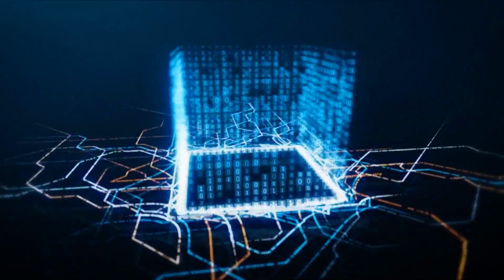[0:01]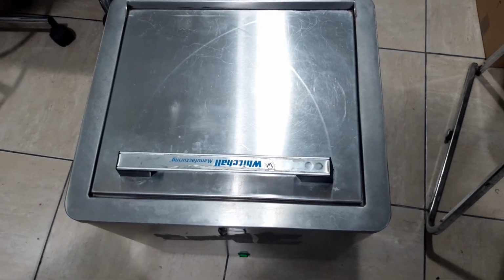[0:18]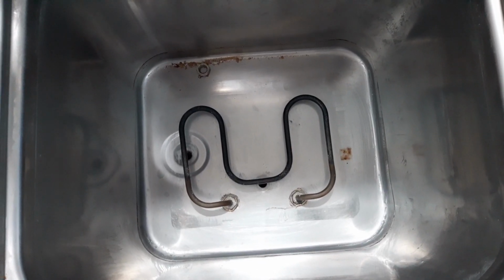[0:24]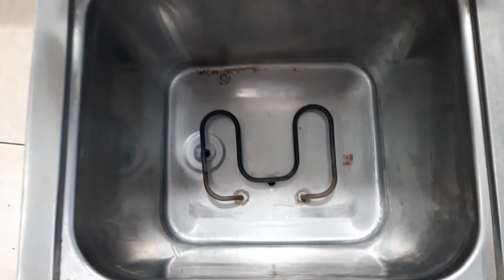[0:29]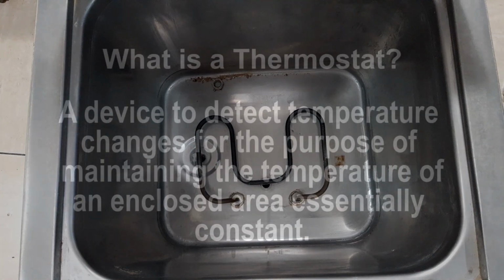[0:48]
Okay guys, I have a hydrocollator, and if we open this one, there is a heater, but the thermostat is missing. So we will connect a new thermostat here, and I will show you the connection and how to connect it. But first of all, let me explain what a thermostat and a hydrocollator are.
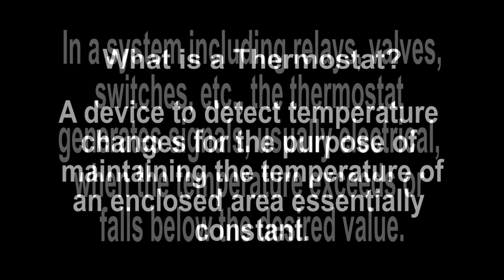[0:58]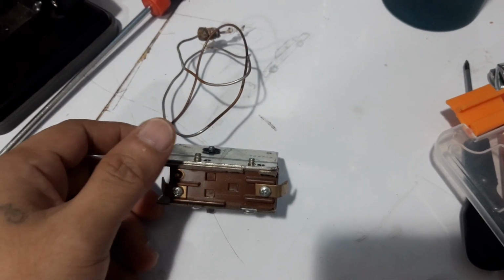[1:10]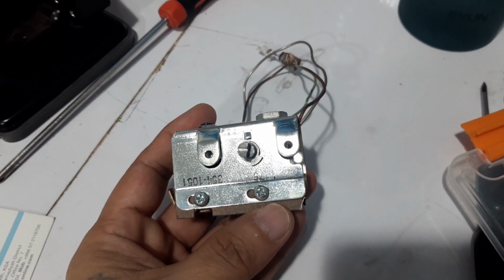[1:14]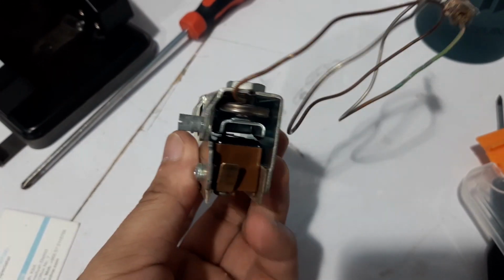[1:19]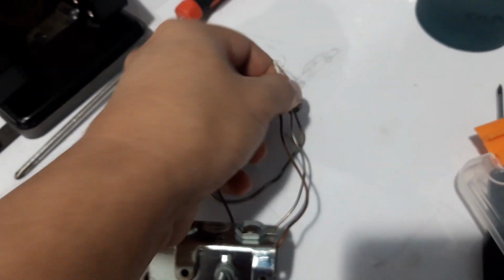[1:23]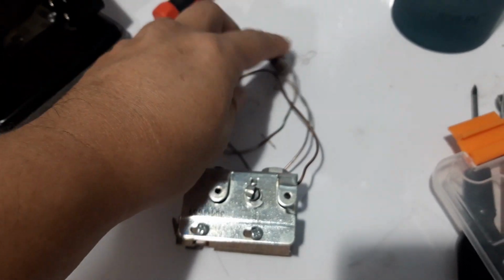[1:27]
So guys, this is a thermostat for a hydrocollator. Both sides are the terminals, and the tip is supposed to be here, but this one is broken, and we will replace it with the new one.
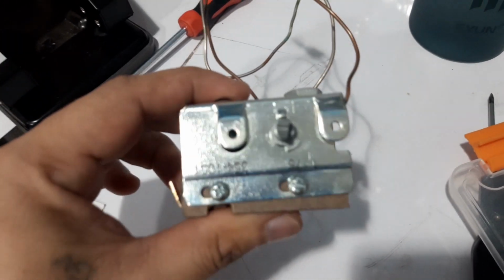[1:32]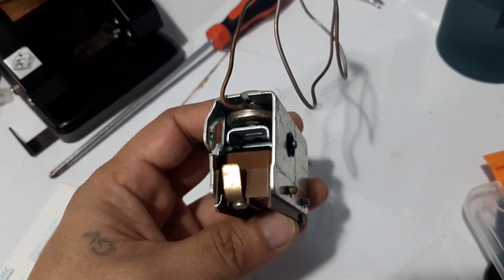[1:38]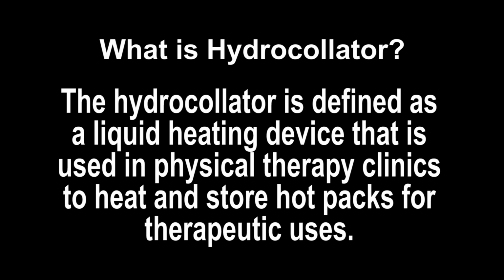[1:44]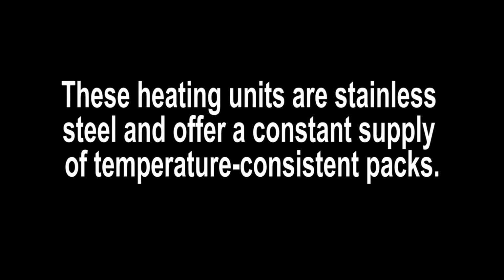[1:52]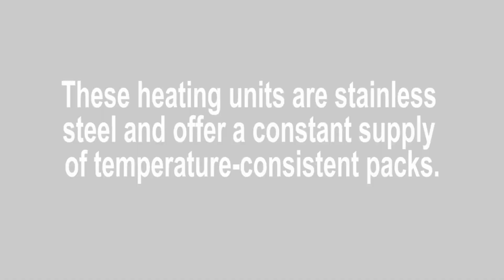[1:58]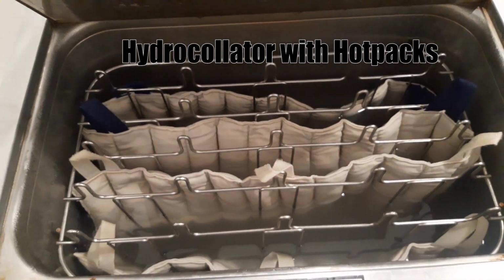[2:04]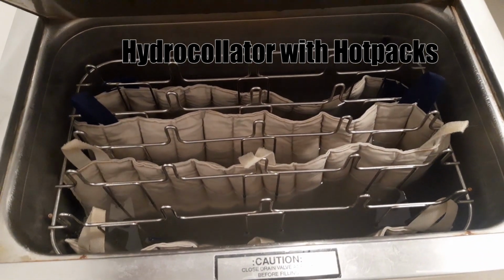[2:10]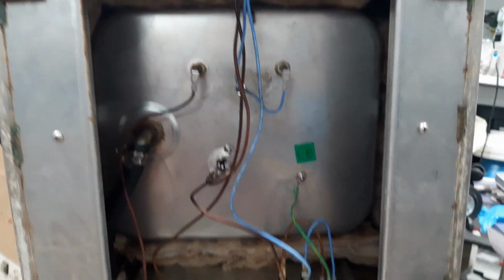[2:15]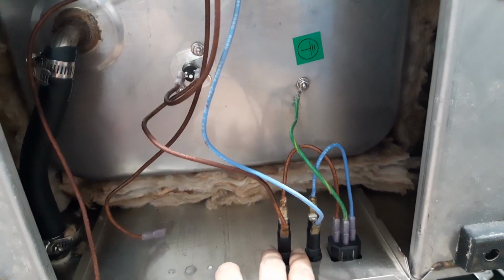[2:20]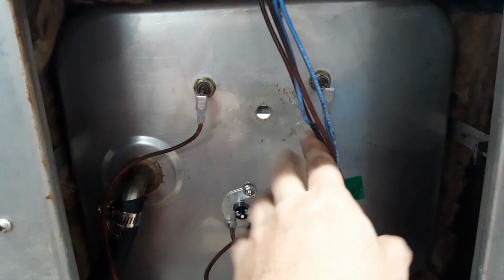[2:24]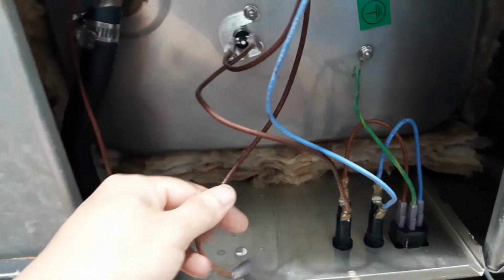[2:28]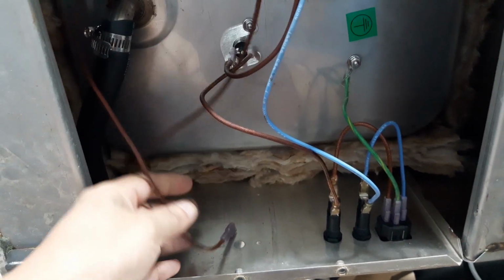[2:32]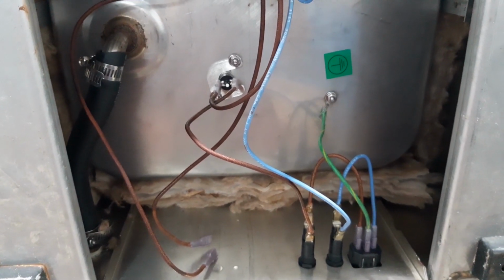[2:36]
So this is the bottom part. From the main power, this is going to the fuse, then going here to the heater switch, and the thermostat is supposed to be here and connected to this wire. So let me show you the circuit.
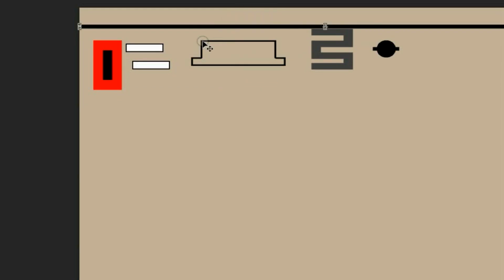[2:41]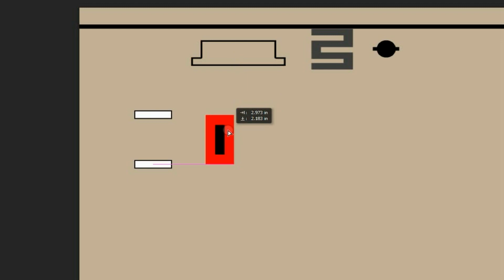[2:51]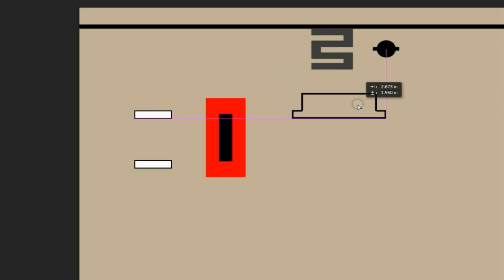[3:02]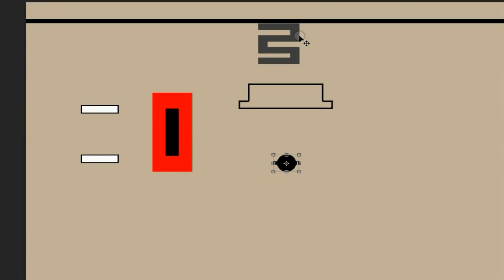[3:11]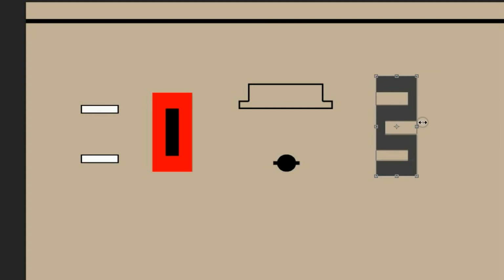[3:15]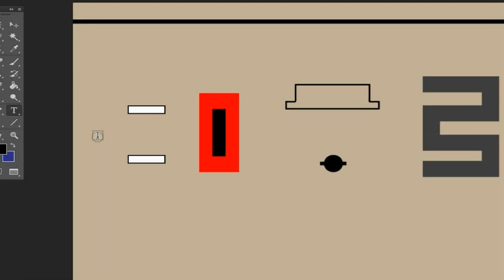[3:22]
Now let us make the diagram on how to connect a thermostat of a hydrocollator. This connection is actually applicable to any device that uses a thermostat. And one thing that you should remember is that this connection is only a series connection. Okay, so from the main power to 220 volts,
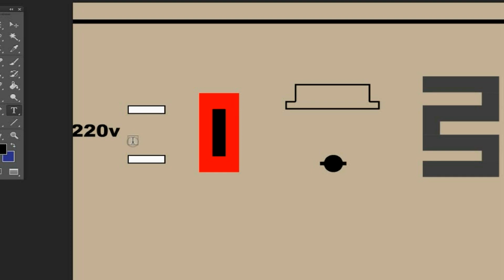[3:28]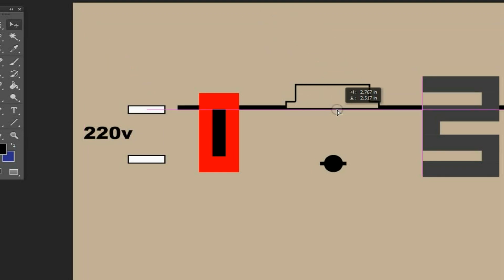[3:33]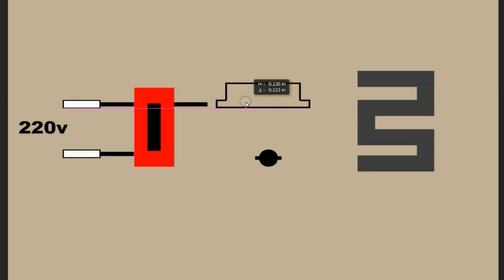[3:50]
we have a fuse. So we have two fuses, and this is connected to the power switch. After the power switch, one line is connected to one of the terminals of the thermostat, and the other one is connected to the NTC, or the negative thermal coefficient.
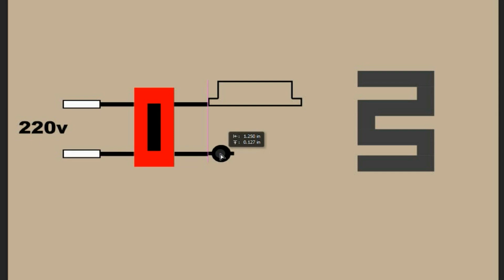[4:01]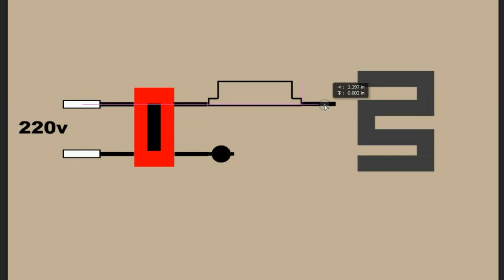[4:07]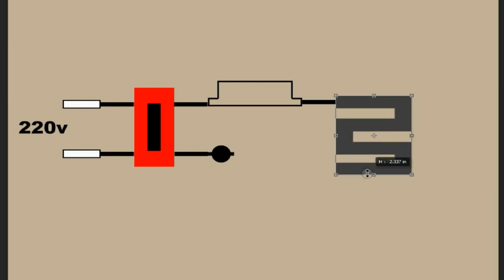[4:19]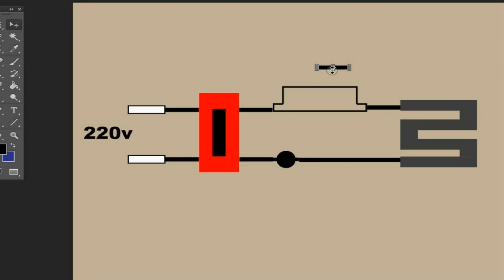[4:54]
And after the thermostat, it is connected to one of the terminals of the heating element. And on the other side, after the NTC, it is also connected to the other terminal of the heating element. And the next thing is the tip of the thermostat. The tip of the thermostat is placed near the heating element.
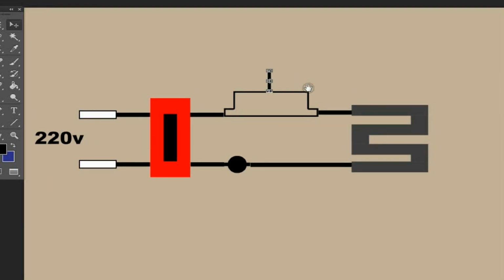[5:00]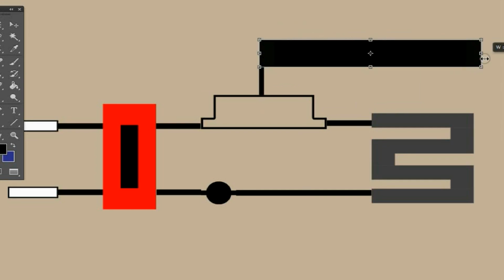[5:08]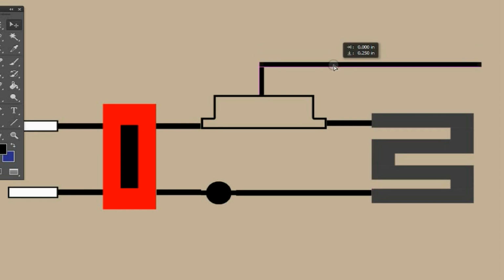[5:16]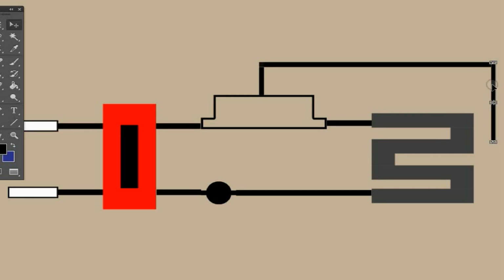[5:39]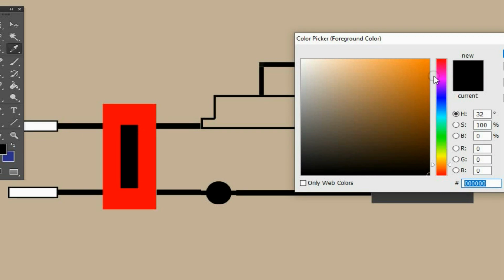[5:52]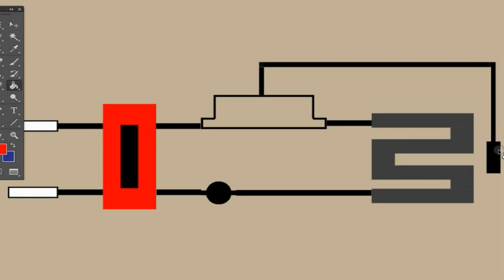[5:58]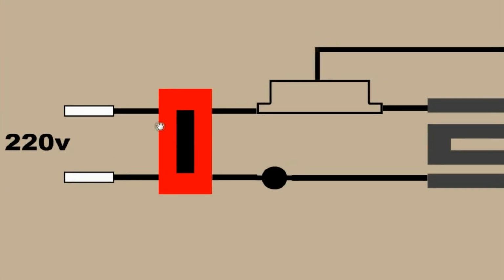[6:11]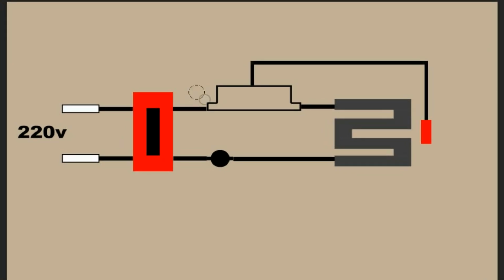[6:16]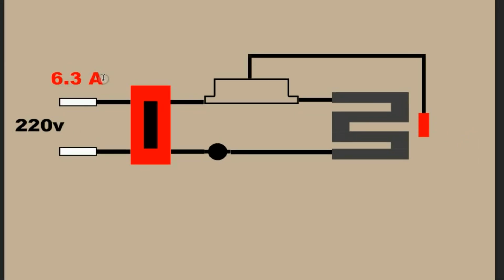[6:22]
So this is the diagram now. I will make labels to show what these components are. First is the fuse. In the hydrocollator, we are using a 6.3 ampere fuse. So we have F1 and F2. And this is the power switch. And this is the thermostat.
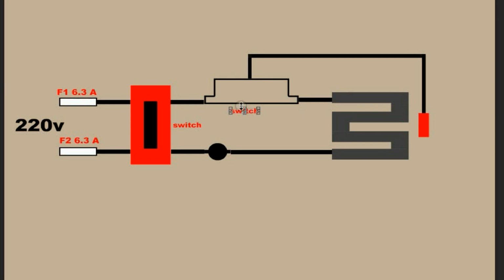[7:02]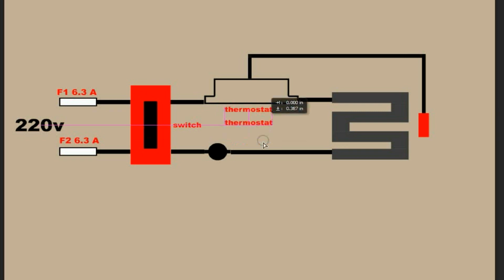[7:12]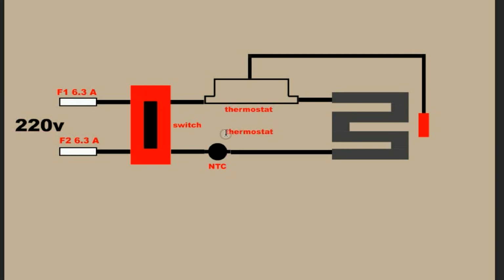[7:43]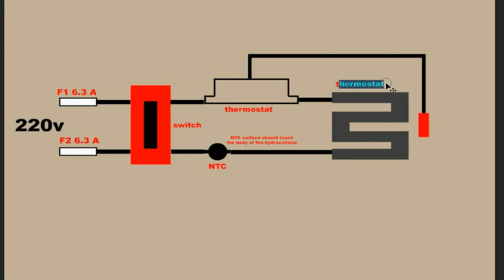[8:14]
Here is the NTC, or the negative thermal coefficient. And by the way guys, the surface of this NTC should touch the body of the hydrocollator. This is an extra safety for the unit to avoid overheating. So this is the heating element, and beside the heating element is the tip of the thermostat. Okay guys, now this is our diagram on how to connect a thermostat for the hydrocollator.
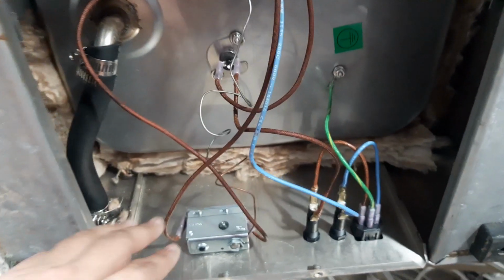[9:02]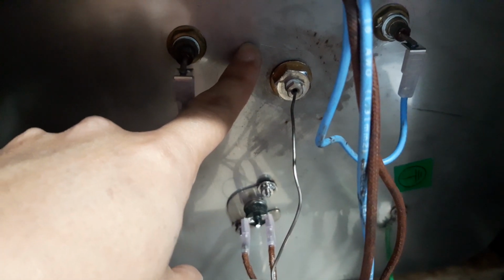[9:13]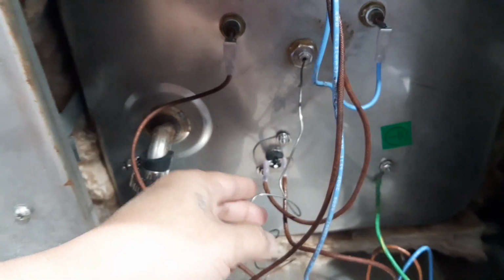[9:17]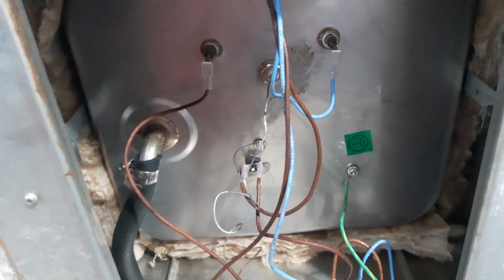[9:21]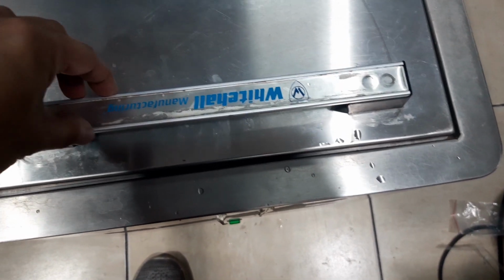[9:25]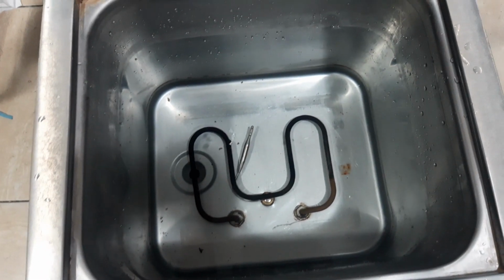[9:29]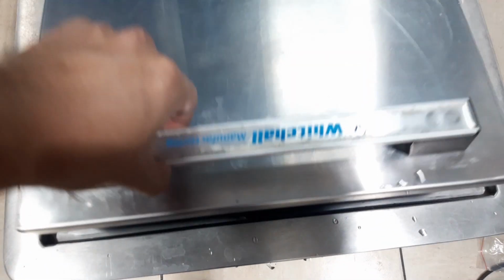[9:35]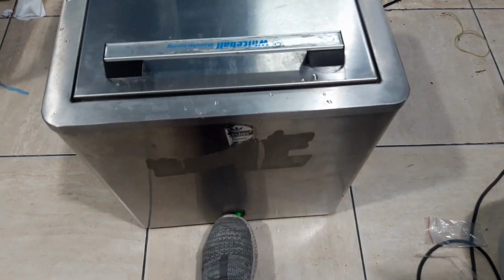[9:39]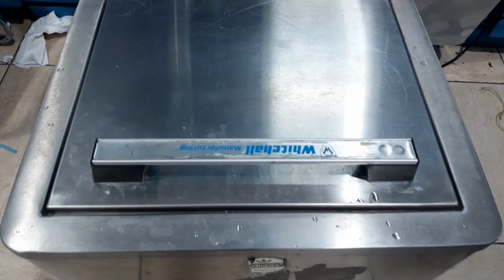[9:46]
So this is the bottom part of the unit, and this is the new thermostat that we connected. As you can see, the tip is on the other side, I mean inside the unit where the heating element is also there. So let us try this. Fill the water and turn it on. Now I have put the water inside. As you can see, this is the heating element, and beside this one is the tip of the thermostat. So we will turn on the unit. Now it is on, and we will wait.
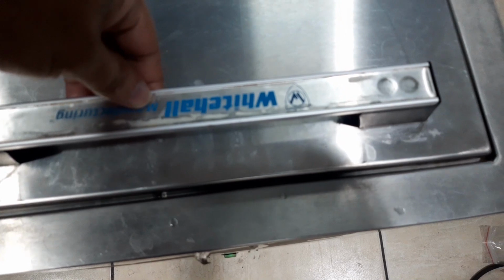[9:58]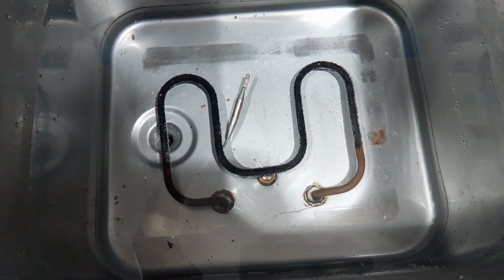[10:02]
Okay guys, so here is now the hydrocollator. As you can see, small bubbles are coming from the side of the heating element. So it started to heat up already, but it should not boil the water, only keep it at around 90 degrees Celsius.
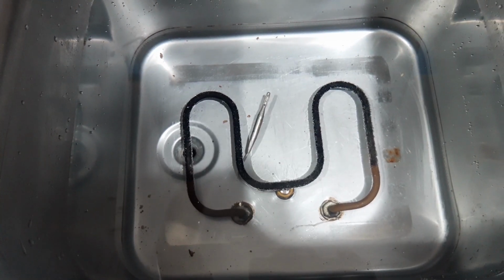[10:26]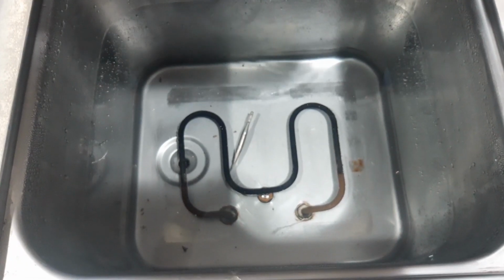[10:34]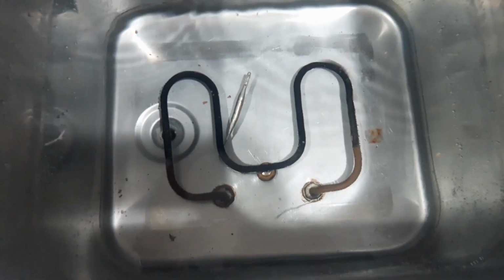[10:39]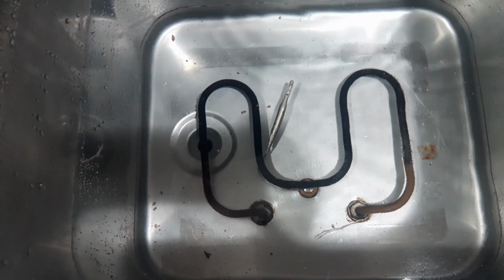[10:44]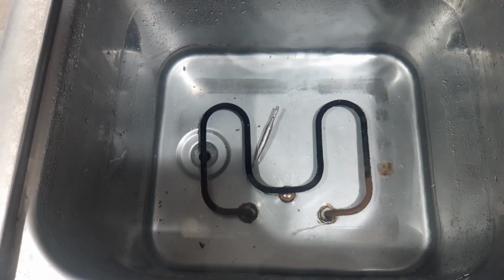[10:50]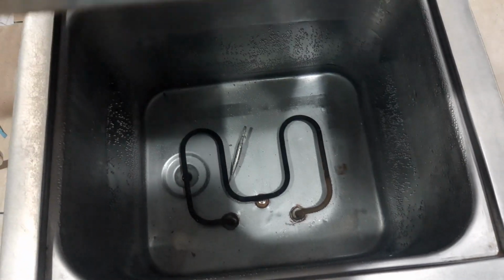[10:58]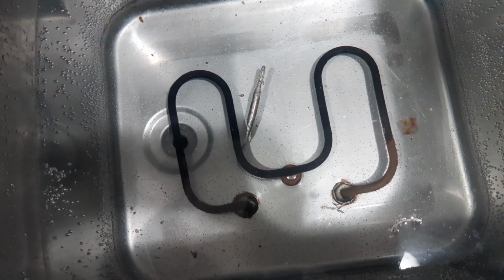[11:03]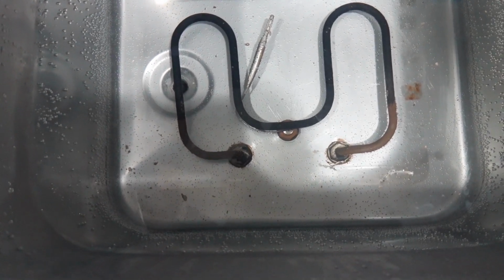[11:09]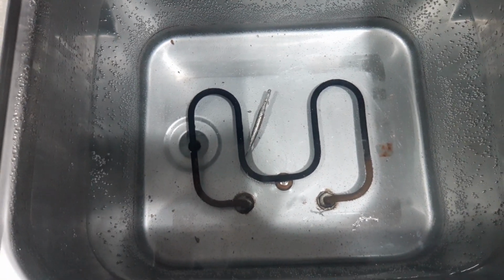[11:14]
So after 1 hour guys, the unit was able to maintain the temperature. It did not boil the water. So again, we will wait for a longer time. As you can see guys, there are small bubbles on the side of the unit, but it doesn't boil the water. So it means that the thermostat was able to control the temperature, and this unit is now working properly.